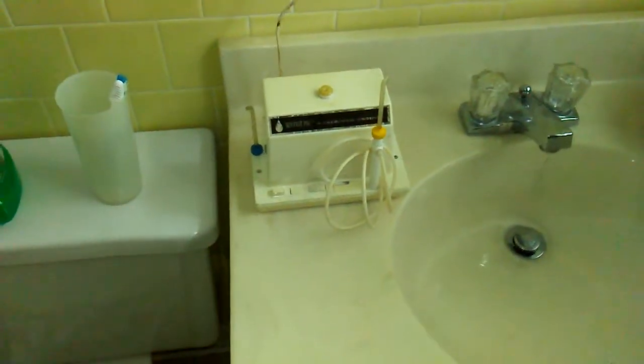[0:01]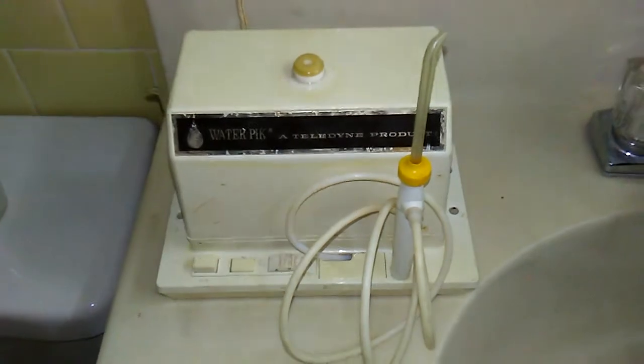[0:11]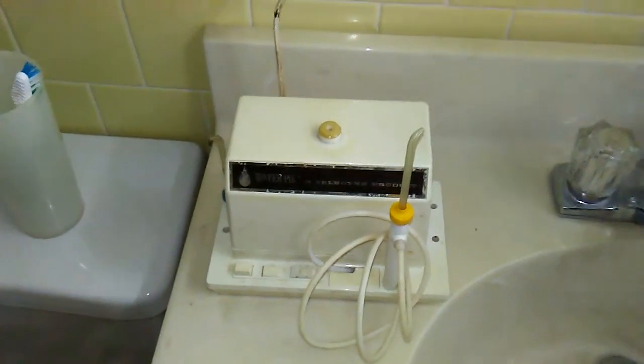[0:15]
Hi there. So a few weeks ago, I started going to a new dentist, and he said I ought to be using a WaterPik. I thought I had one up in the attic, and sure enough, here it is. It's a model 71. I think it's maybe from the 1970s.
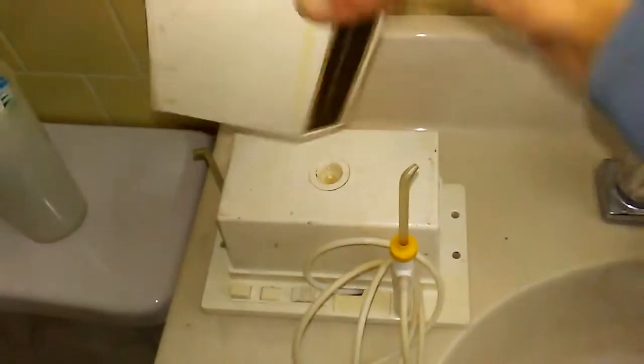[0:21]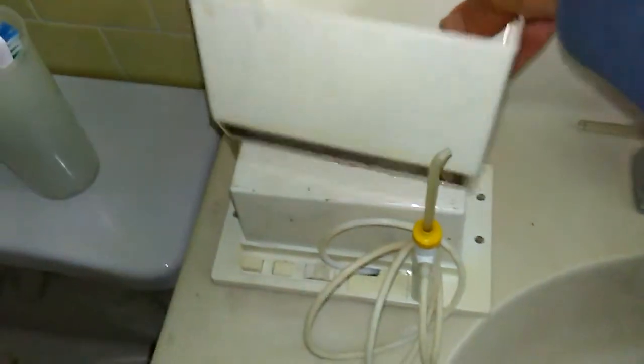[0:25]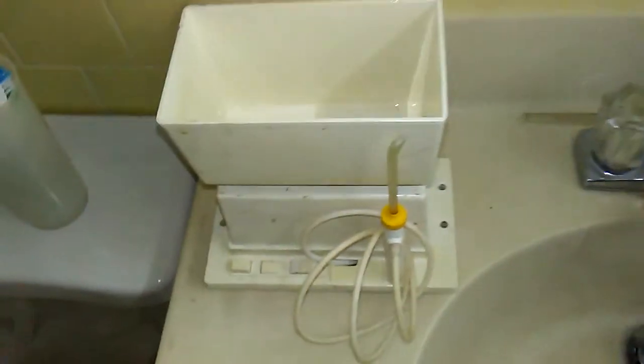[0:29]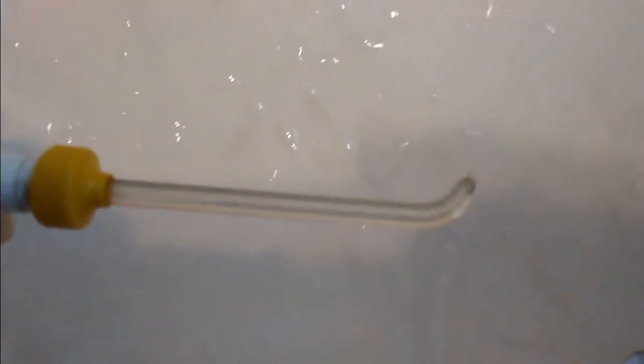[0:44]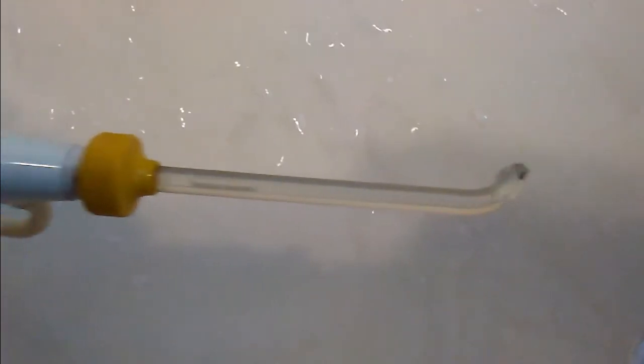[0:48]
This cover here flips over, forms a reservoir for the water. Anyway, it worked great for about a week, and then it started leaking. So if we turn it on here, kind of hard to see on camera, but what it does is it pulsates for a few seconds, and then it starts dribbling for a while, and then it'll pulsate again.
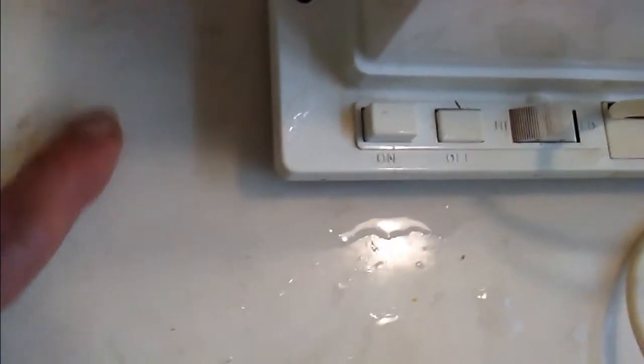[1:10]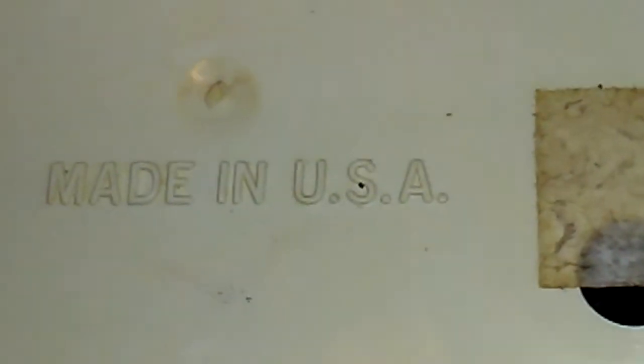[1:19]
And if we look on the unit, you can see that it's leaking. And it's also leaking from the bottom onto the sink, making a nice puddle here and then dripping onto the floor. So let's see what we can do with this thing. Again, it's a model 71. Made in USA. Can you believe it?
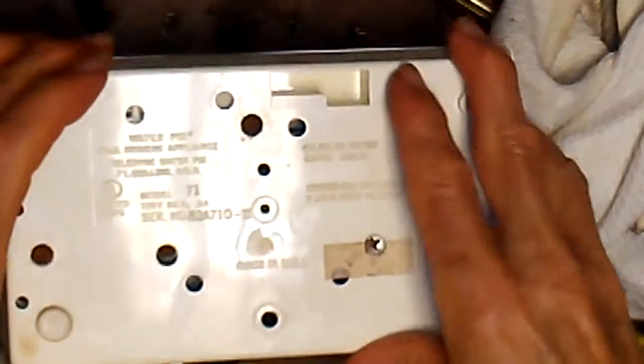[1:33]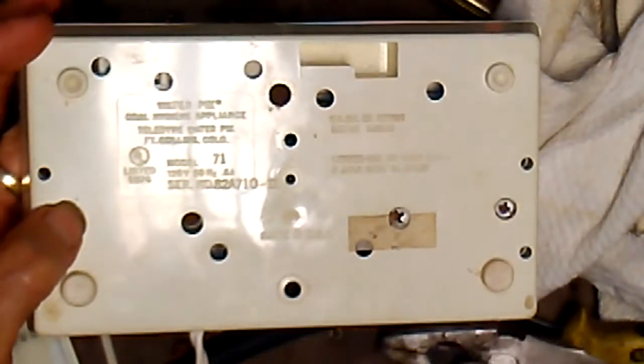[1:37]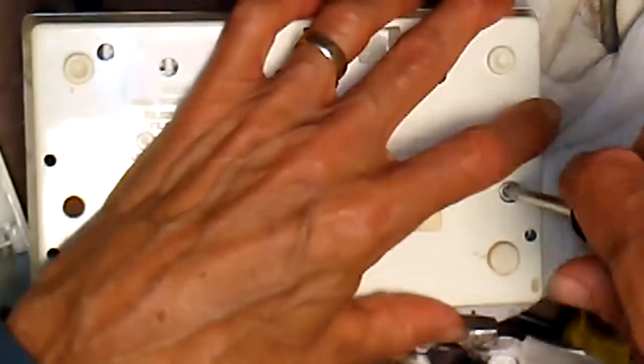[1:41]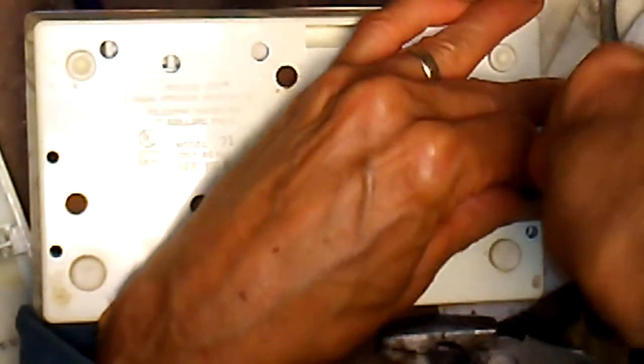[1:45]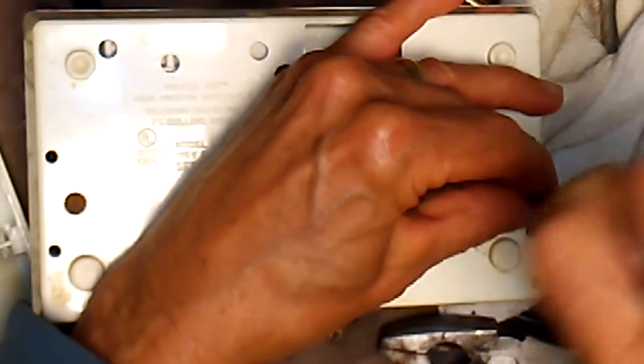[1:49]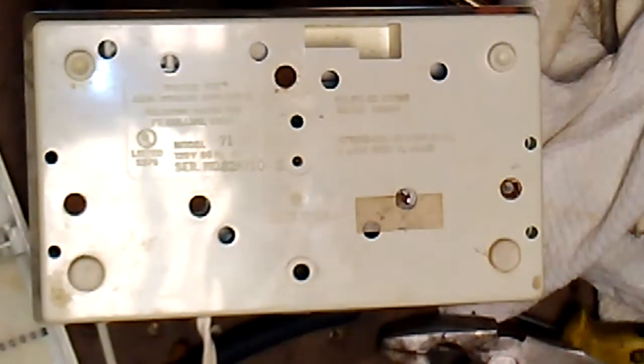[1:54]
Looks like the bottom is held on with 4 or 5 little screws here. These are metal into plastic, so they're going to be stuck in there pretty good, and they're rusty as well. Yeah, that's real tight. There it goes. Okay, I got one out. So I got all the screws out except one here.
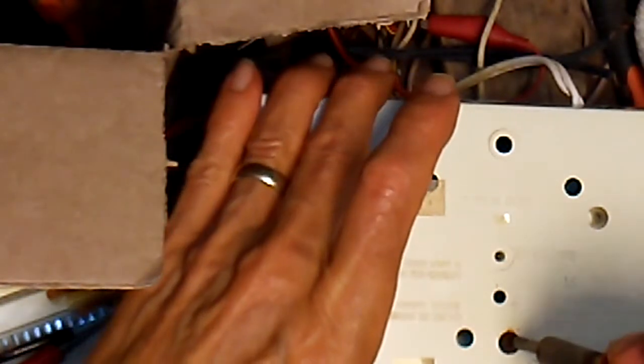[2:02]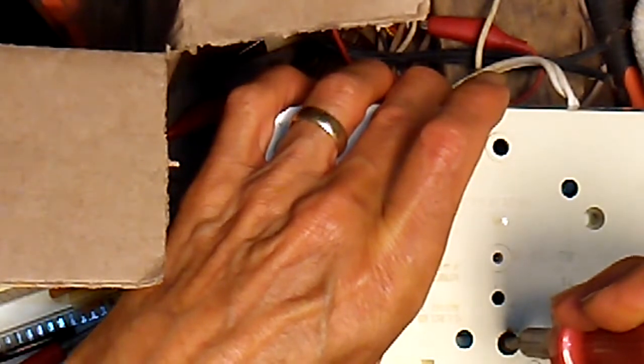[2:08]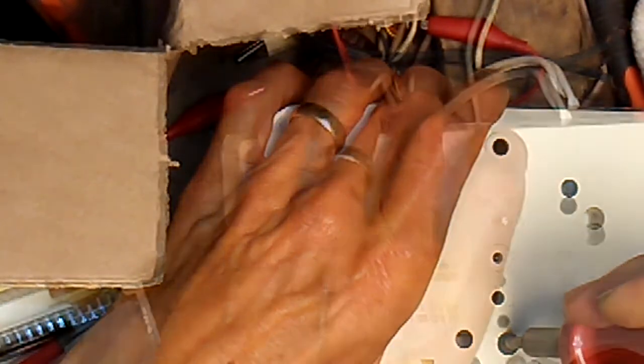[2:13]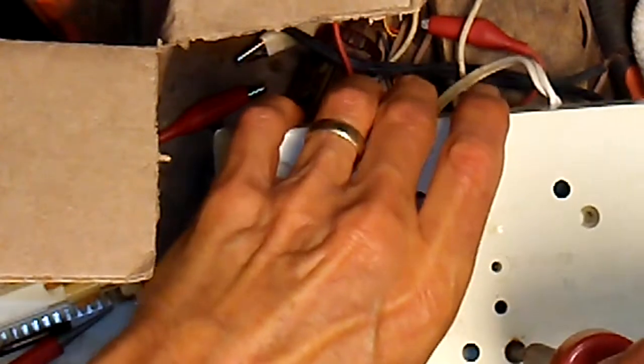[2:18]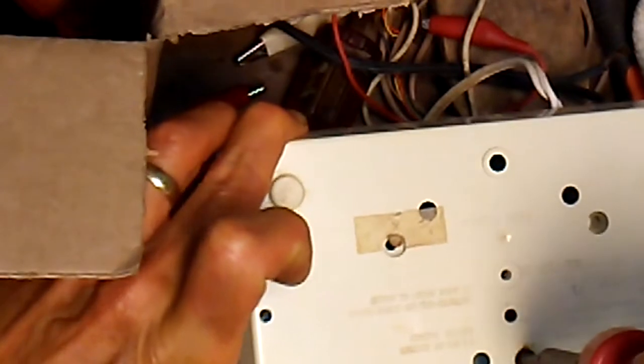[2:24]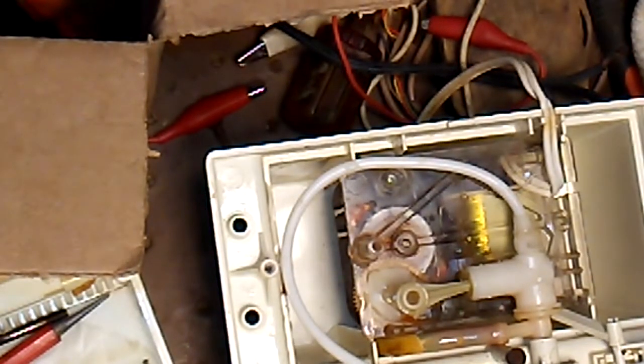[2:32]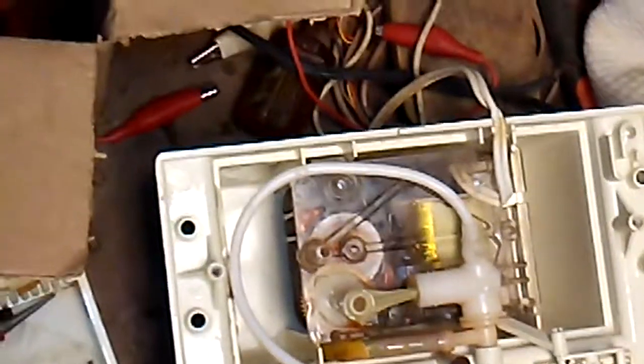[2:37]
It's really rusty. Just can't get a grip, so I'm just going to melt it out with a soldering iron here. Okay, it's coming. There it goes. That's after about 2 minutes of melting. So it looks like there's a motor and a little pump here. And here's the hose from the reservoir.
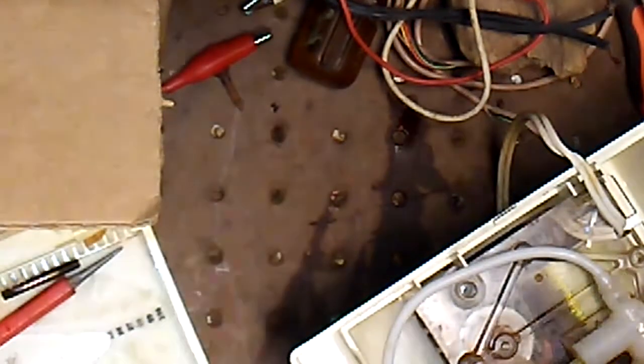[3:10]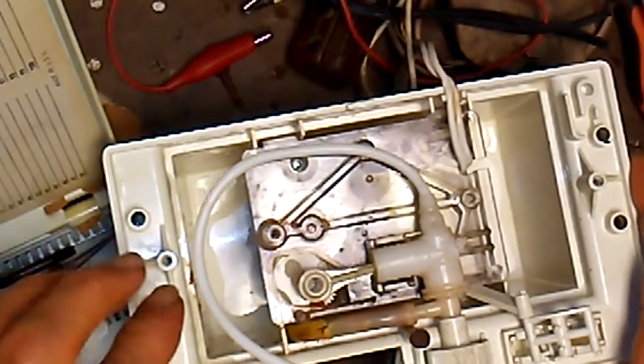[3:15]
It looks in pretty rough shape. Not sure what happened there. Maybe heat from the motor made it degrade. But if you squeeze it, it just comes apart completely. So let's take this out, see what we can do. Looks like the whole unit will just slide out now.
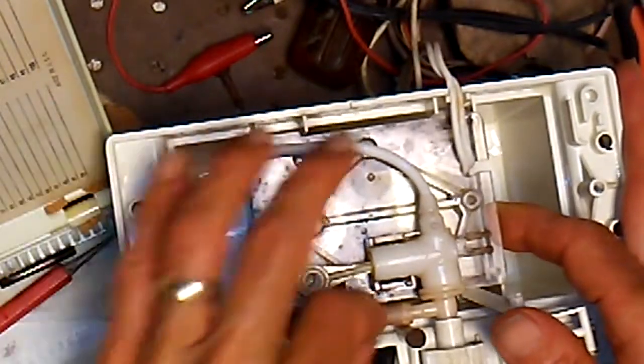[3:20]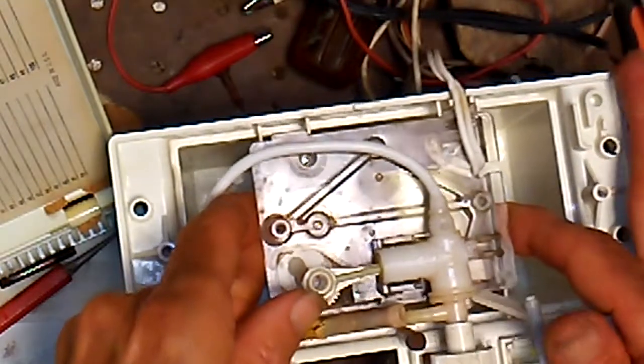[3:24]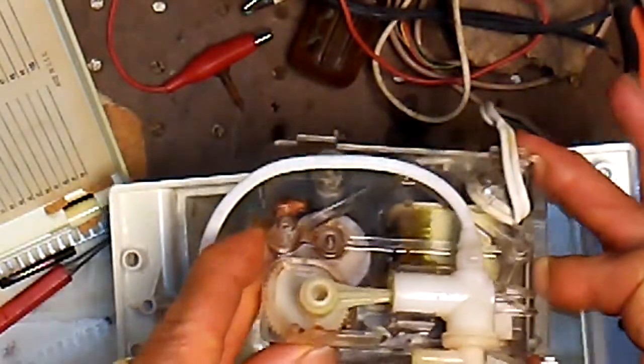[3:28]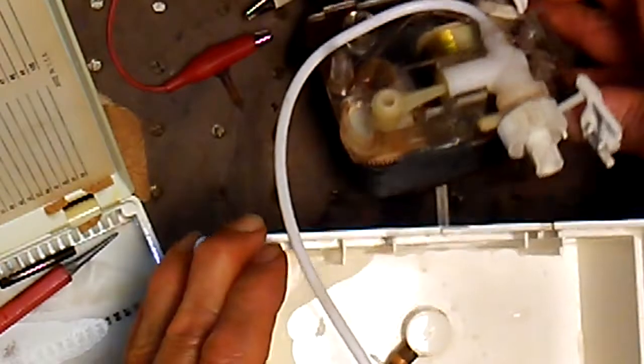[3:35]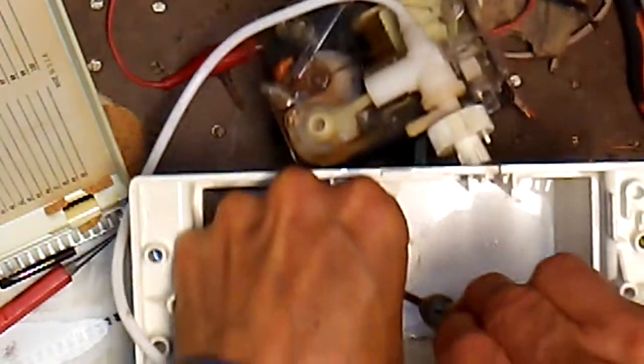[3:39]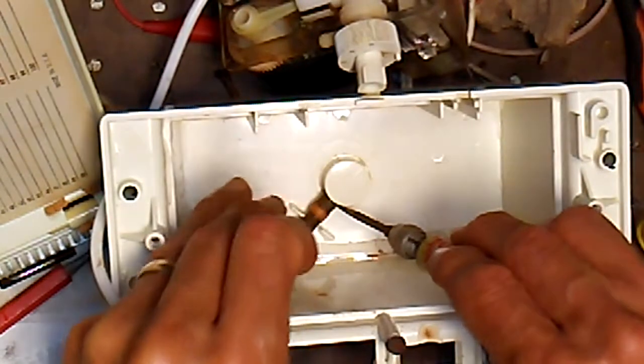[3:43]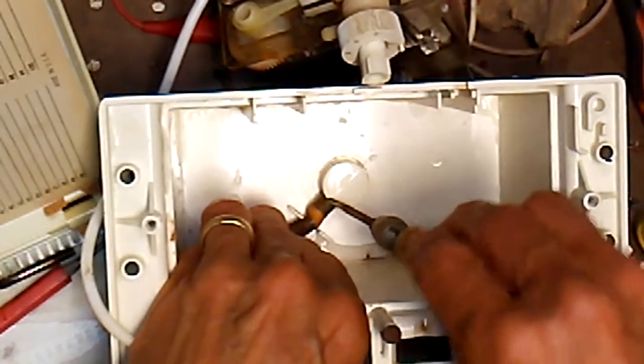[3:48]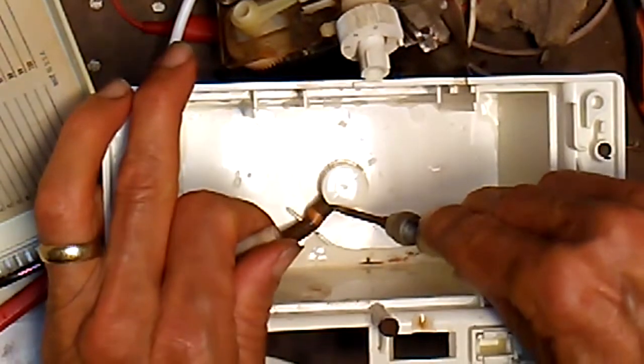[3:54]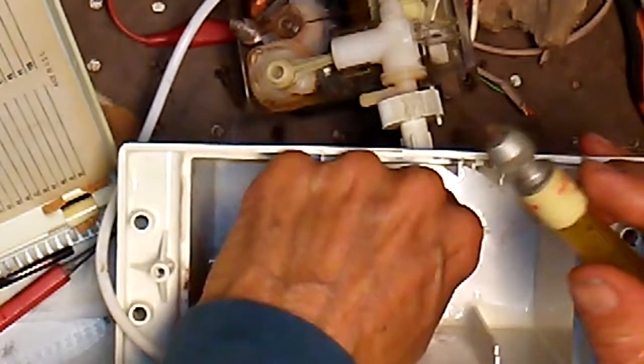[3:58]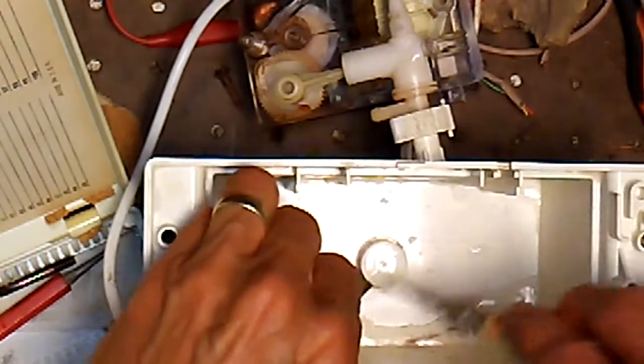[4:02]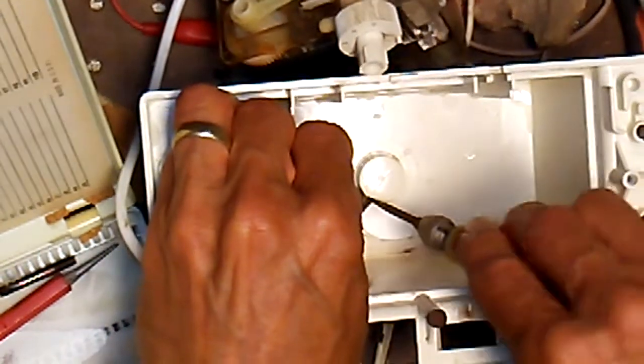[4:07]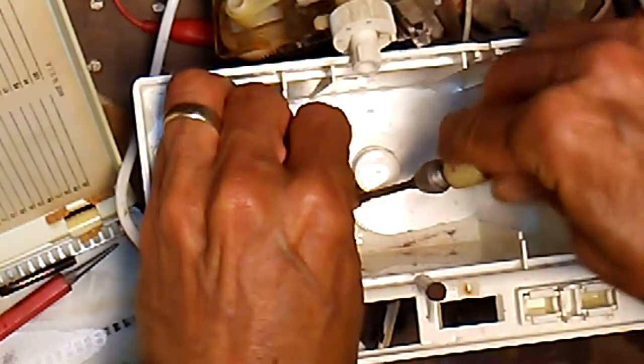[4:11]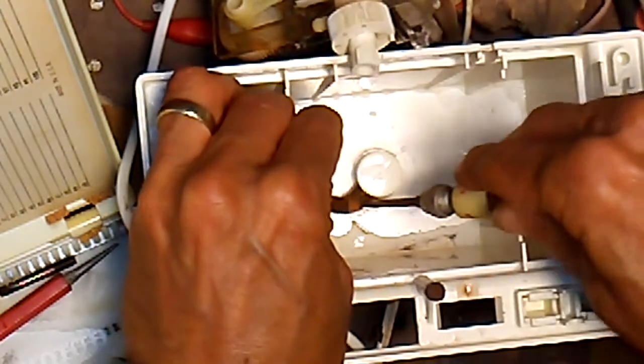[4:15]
Let's take the hose off. Sure enough, this just slips right out. And there's the rest of the hose. It looks in pretty rough condition as well. See if we can get it off the barb here. It's not going to come off easy. Probably have to tear it off. See if we can get the screwdriver underneath here and pry it. And it's not coming off, it's just falling apart.
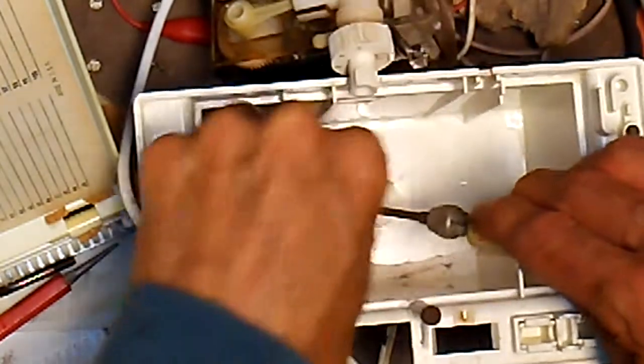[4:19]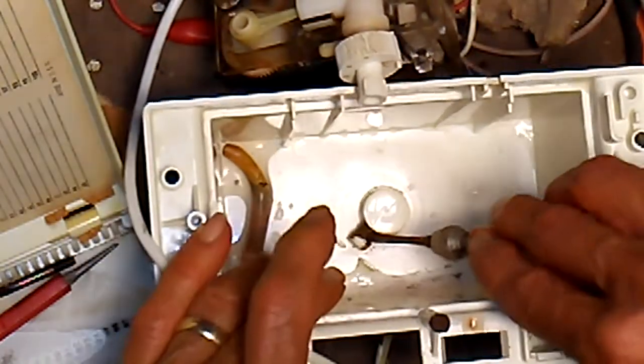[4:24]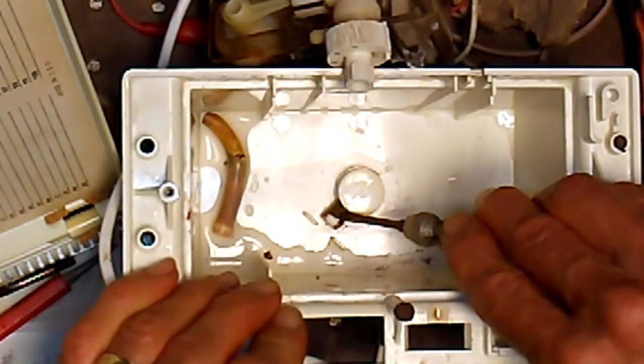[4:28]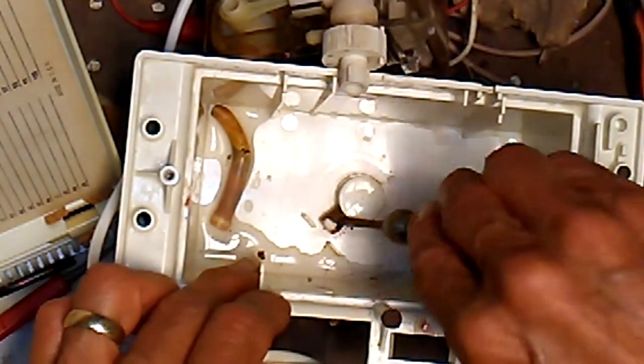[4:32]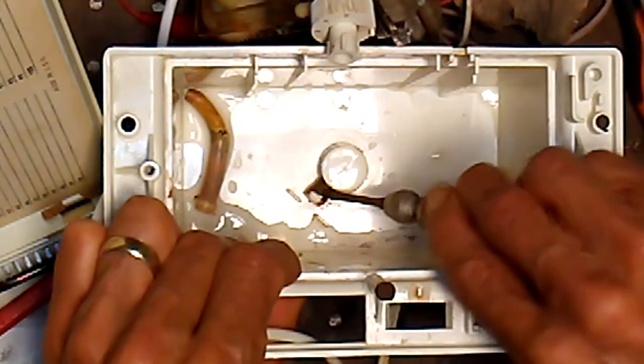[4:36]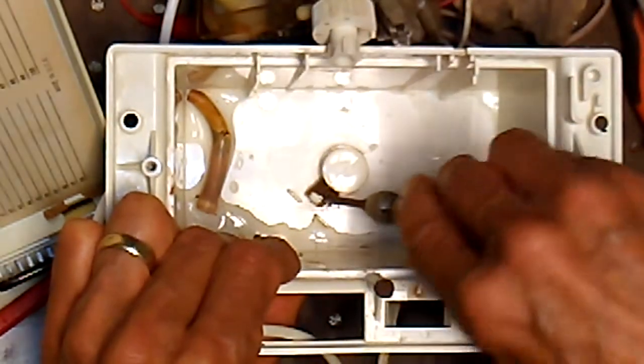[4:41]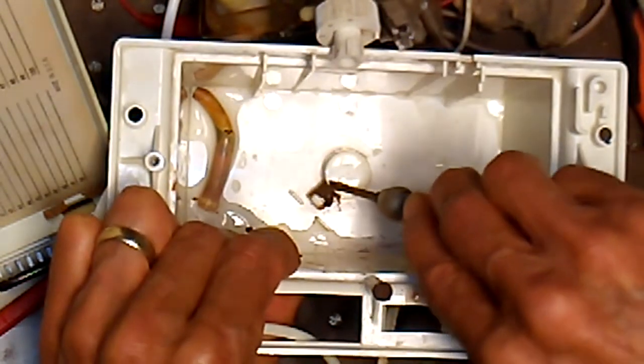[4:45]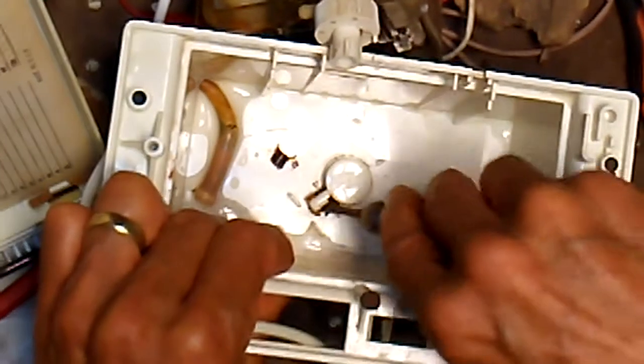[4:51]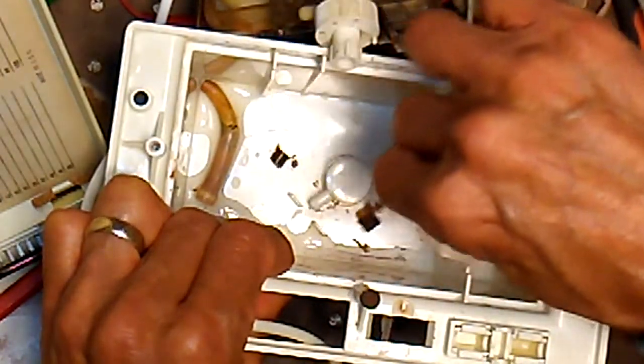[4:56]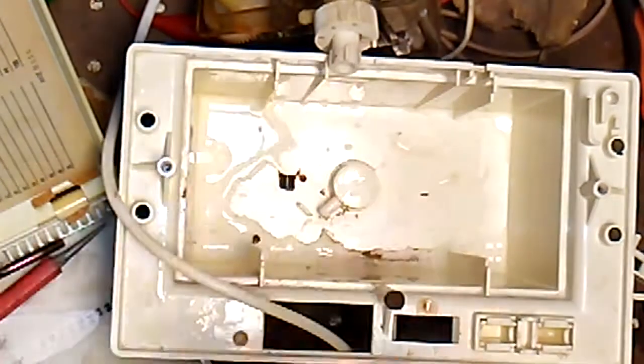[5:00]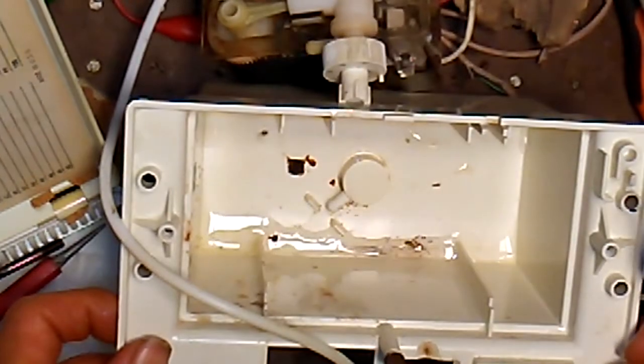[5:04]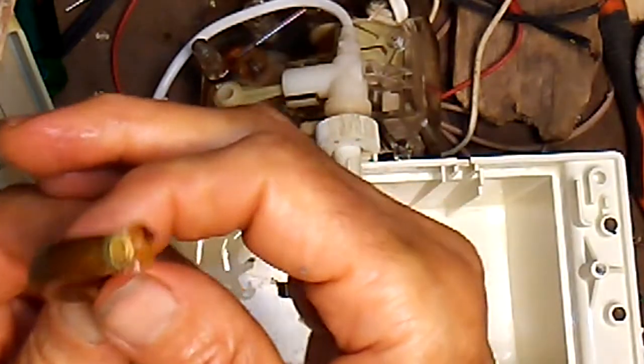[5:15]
Okay, so the hose is torn off. There's still a stub on there. And it looks like we'll just have to break that up. Okay, there it goes. Again, it's just falling apart completely. Looks like the barb is in okay shape. So maybe just have to replace this piece of tubing. So there's the full tubing. You can see it's in terrible shape and just disintegrating all over the place.
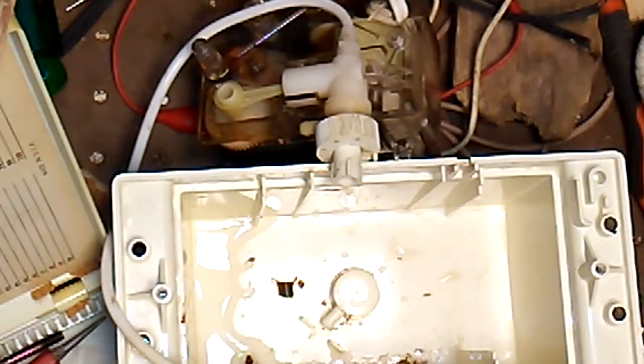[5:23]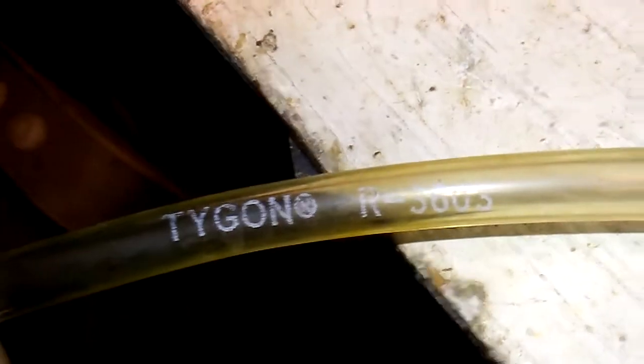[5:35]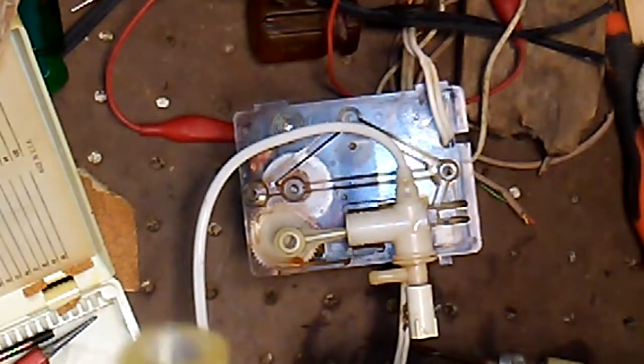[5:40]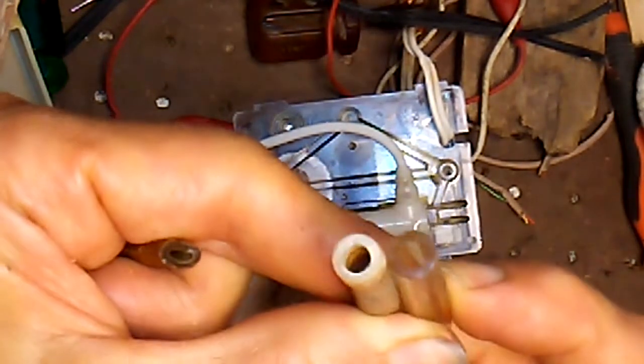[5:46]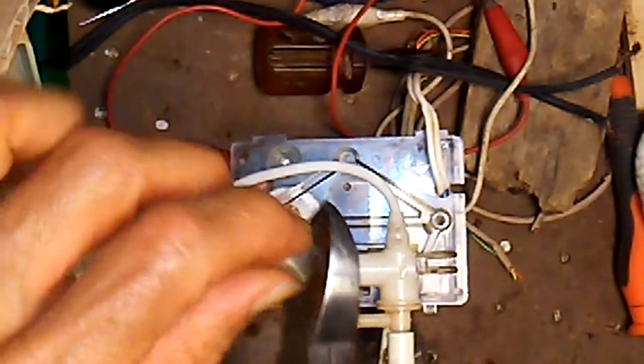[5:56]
Let's see if we can find something similar. Happen to have some of this Tygon tubing. It's Tygon R3603. This is 3/16 inch inside diameter and 1/16 inch wall. We compare that to the old tubing. It's pretty similar, maybe a little bit larger inside diameter, but let's go ahead and try it. Just cut a piece about the same length.
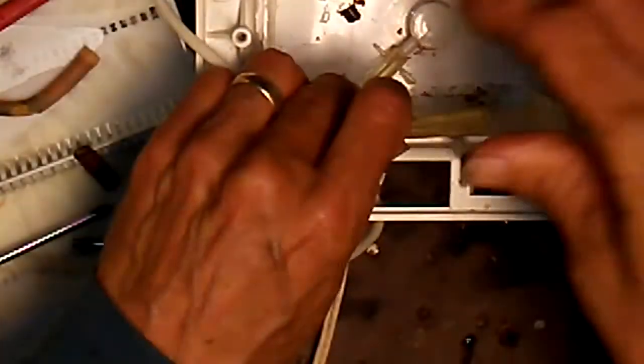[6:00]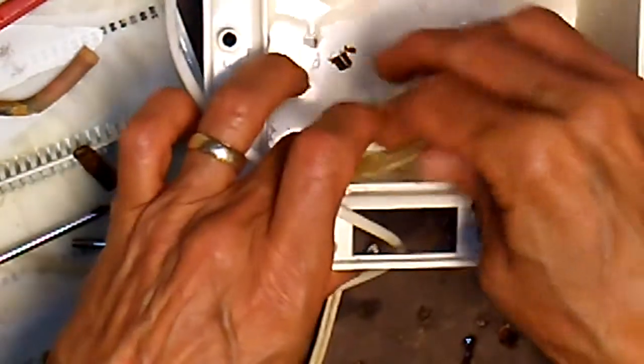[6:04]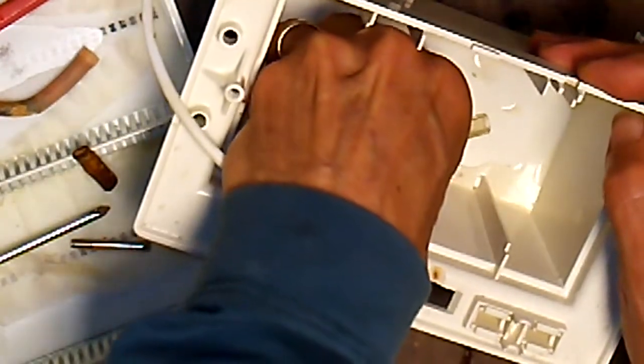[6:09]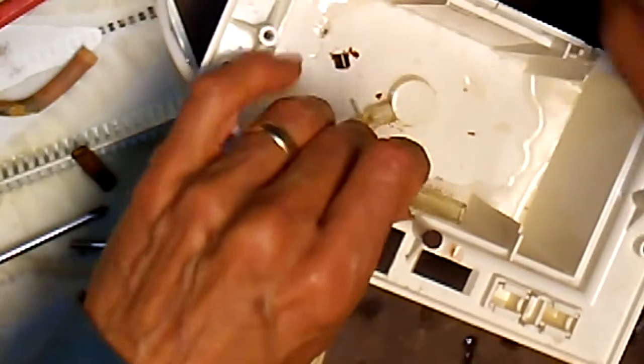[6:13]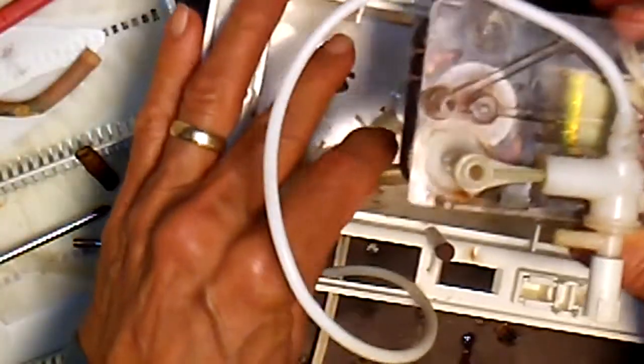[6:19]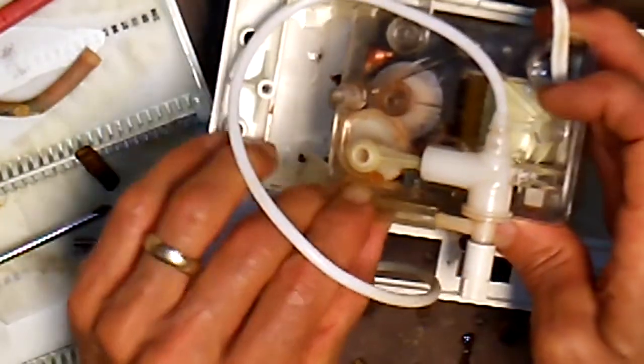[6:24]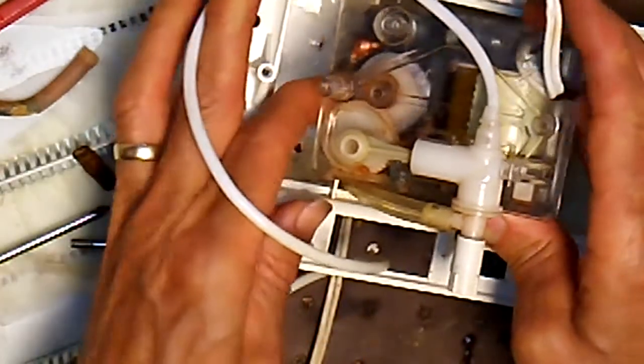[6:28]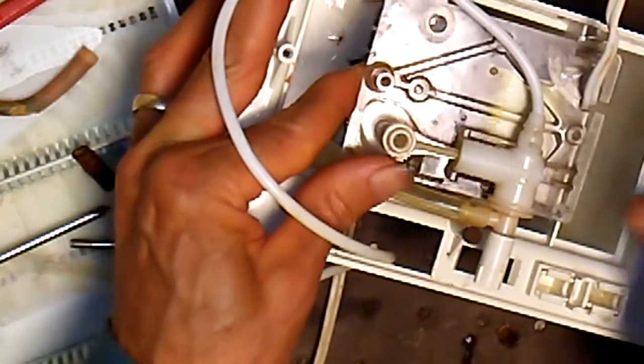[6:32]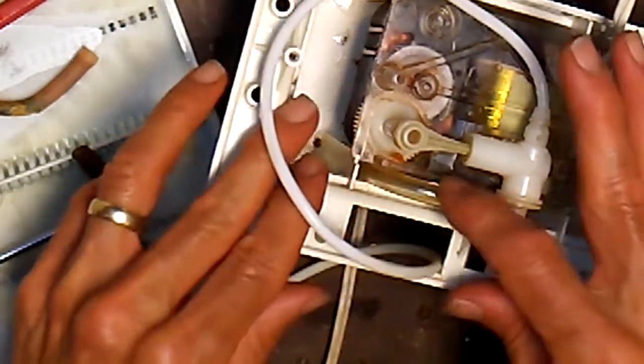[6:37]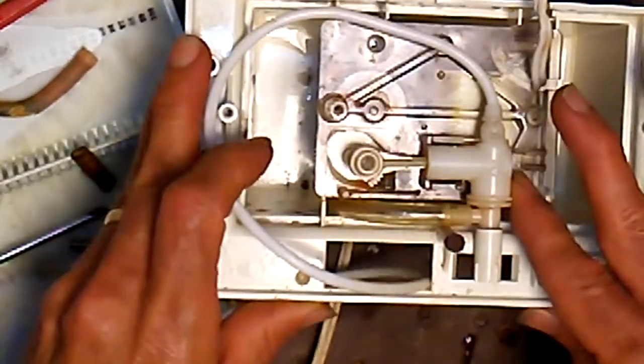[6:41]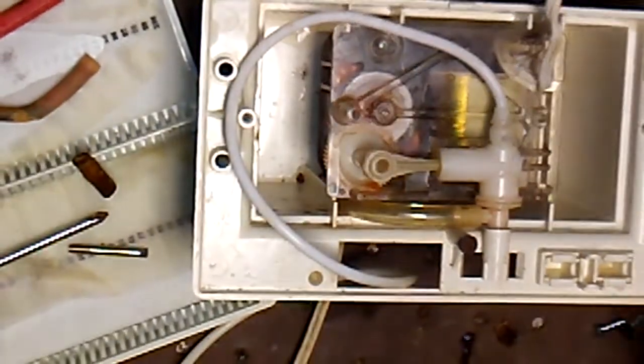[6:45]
See how that fits onto the reservoir here. And it seems to fit pretty good. It's on there pretty snug. Let's try the other end here. And that goes on pretty good. Maybe not as tight as it could be, but there's no real pressure on the hose. It's just gravity feed, so I think it'll be okay. And it looks like the length is just right as well.
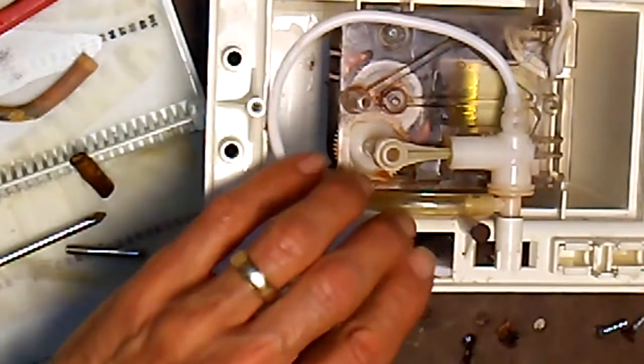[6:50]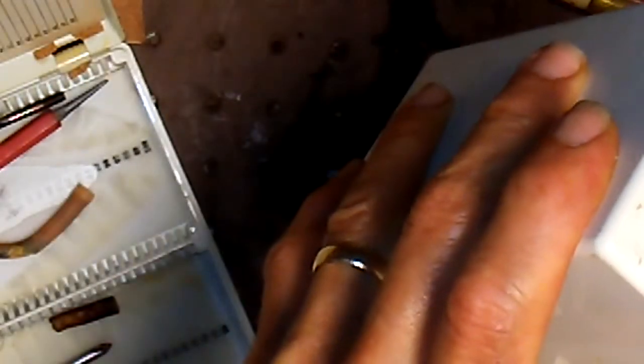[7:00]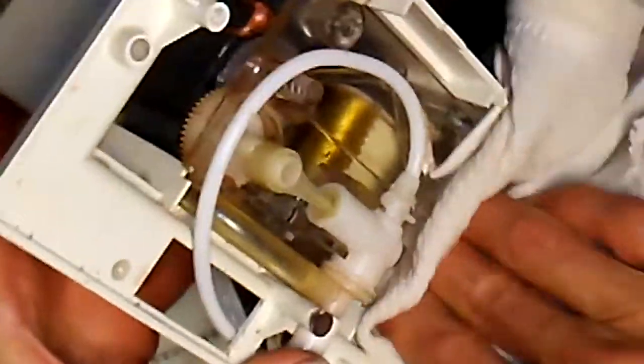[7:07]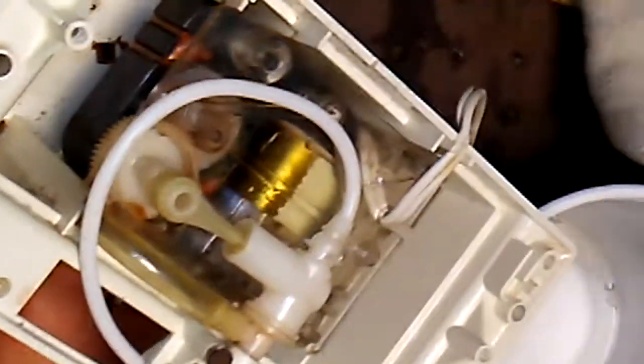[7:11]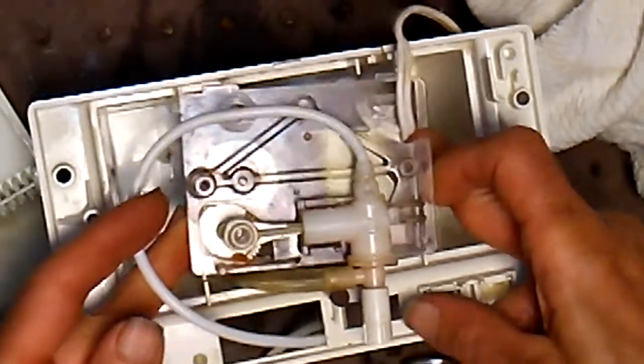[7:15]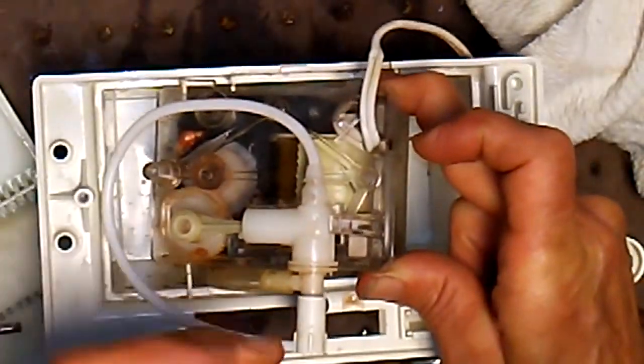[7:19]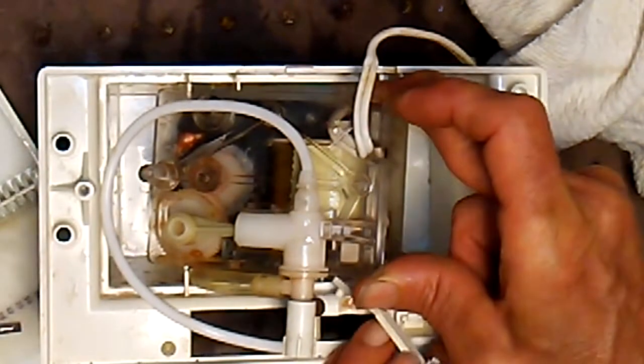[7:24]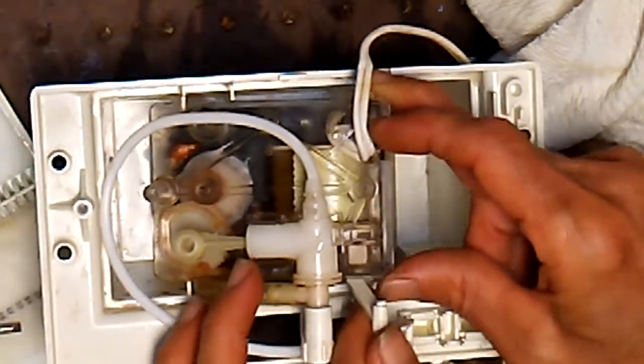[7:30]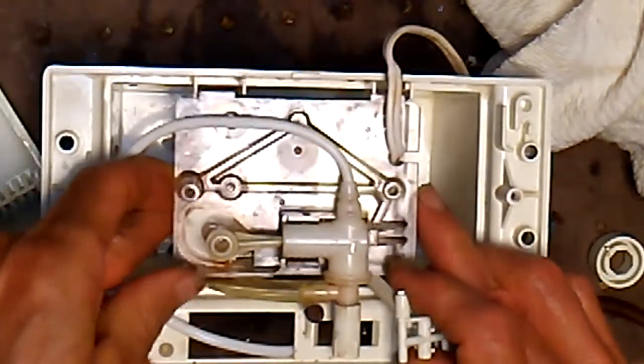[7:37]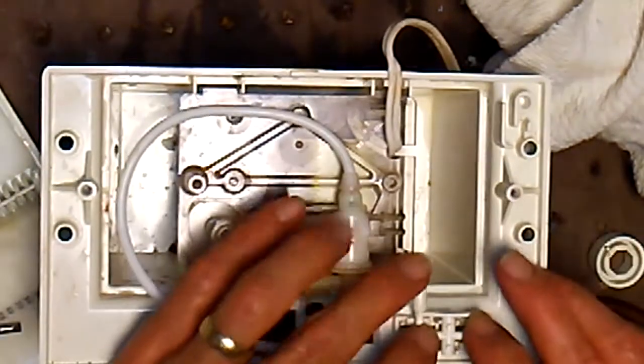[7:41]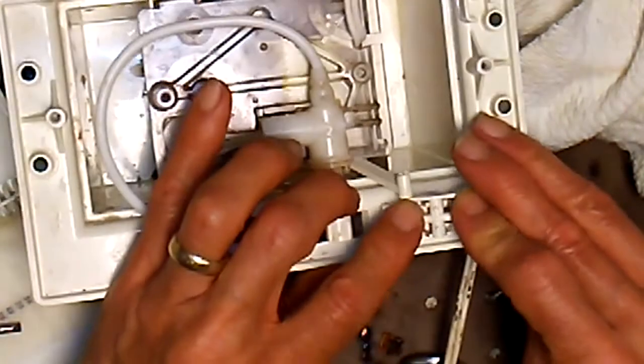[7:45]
There's a bunch of water in there. Let's dry that out. Now I just have to replace this on-off switch linkage. So there's a little square peg there, fits into a slot on the lever. Just slip that right back in. Okay, that seems to be working.
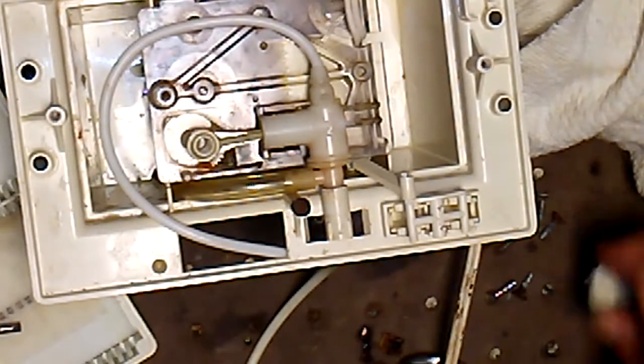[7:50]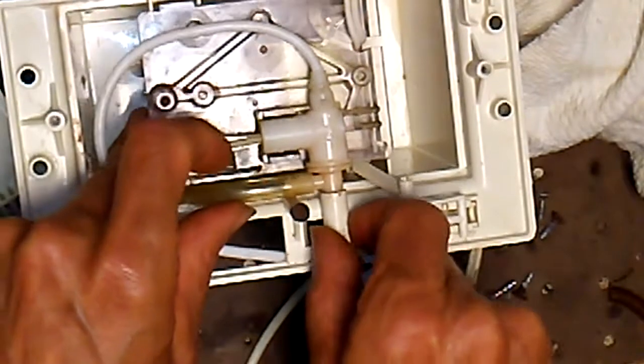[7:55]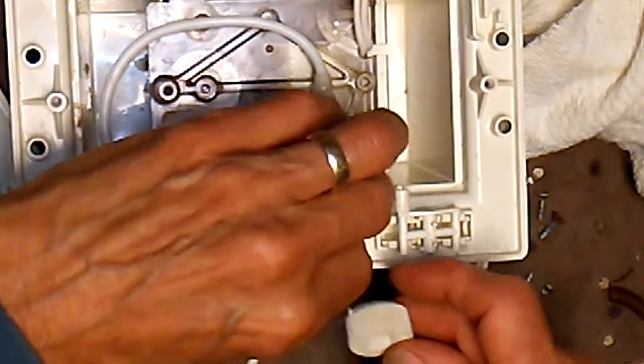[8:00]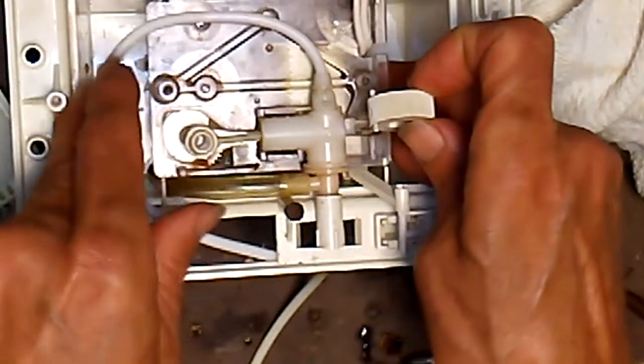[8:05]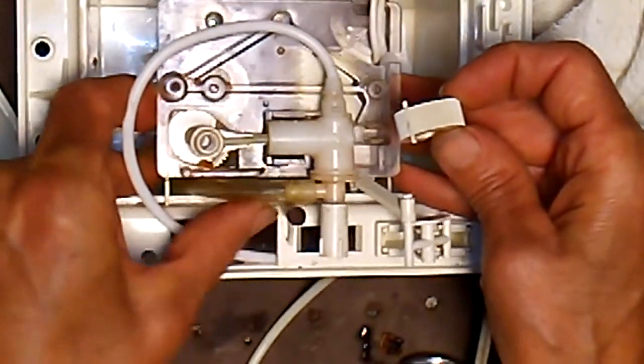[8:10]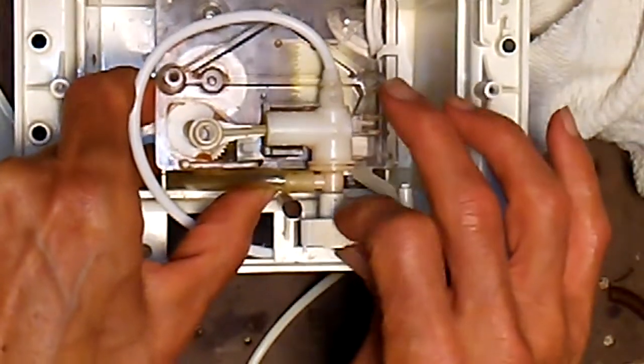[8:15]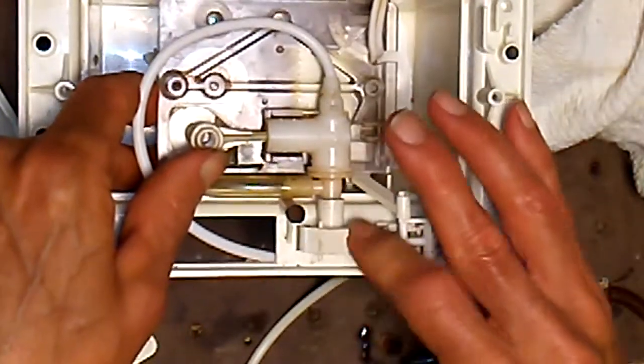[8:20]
Now I just have to replace the control knob. Kind of a square shaft here. And there's a little pin to stop the travel. So that's turned to the far left position, which means it has to fit on here with the pin on the left. And that seems to be working right.
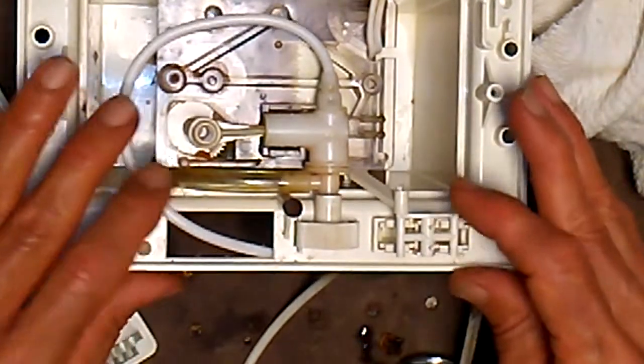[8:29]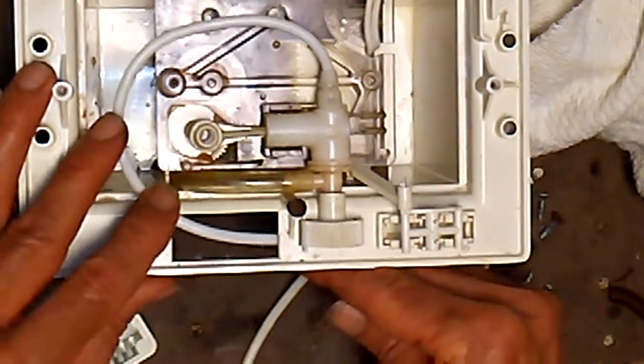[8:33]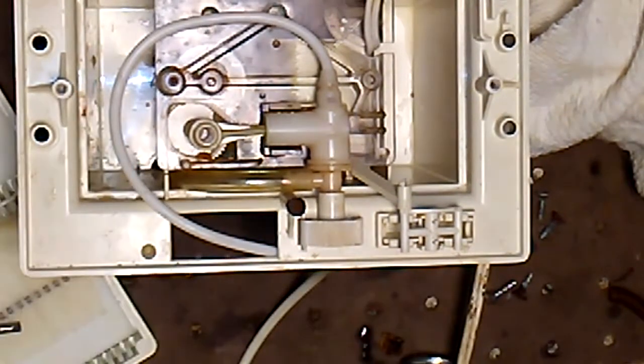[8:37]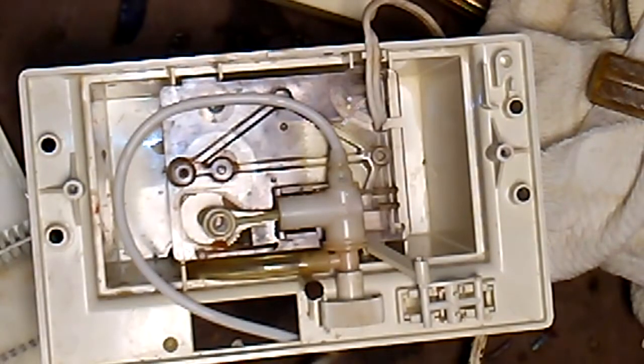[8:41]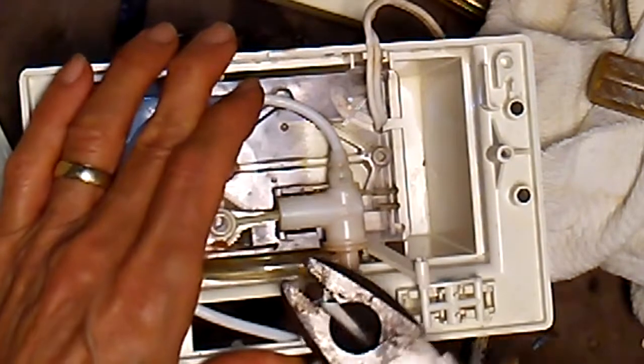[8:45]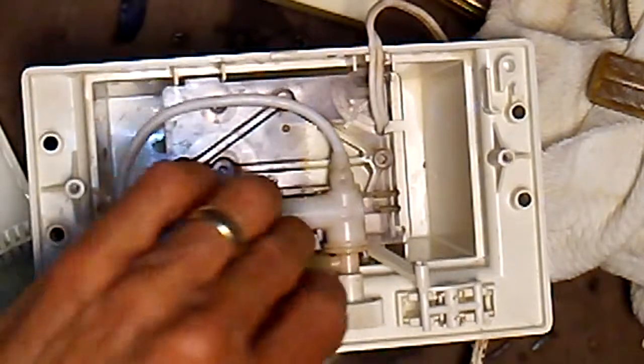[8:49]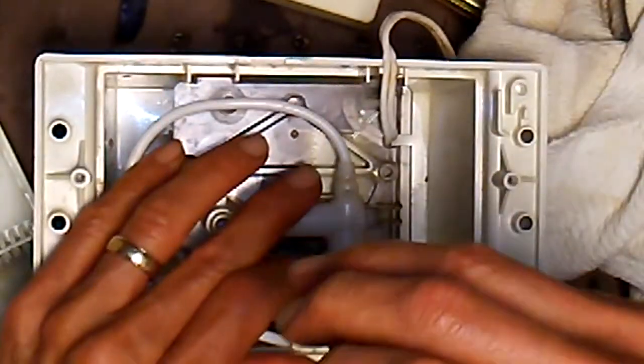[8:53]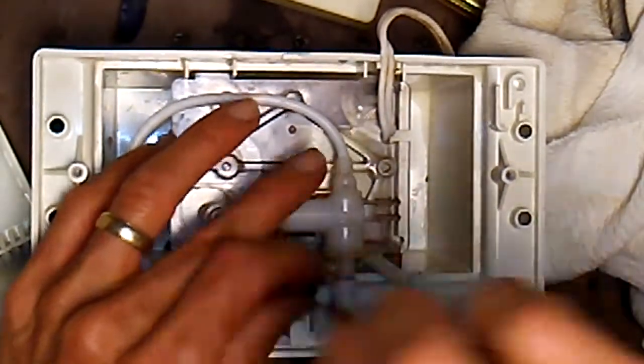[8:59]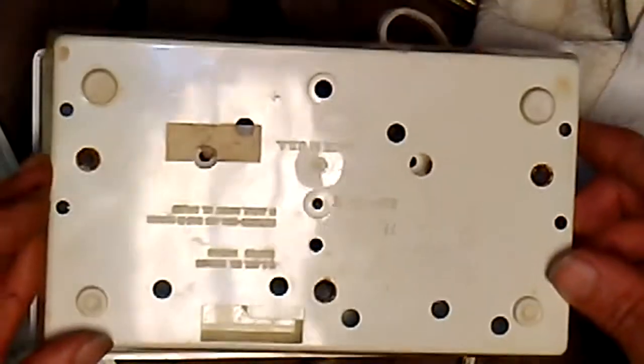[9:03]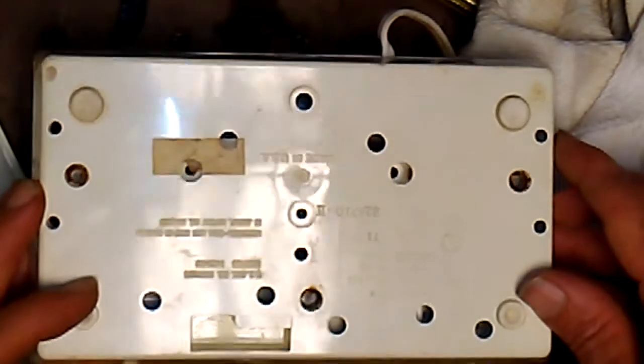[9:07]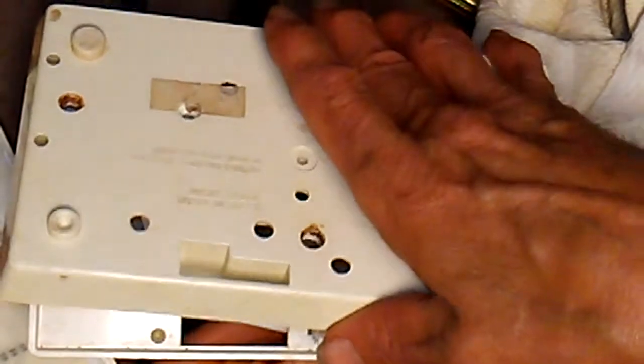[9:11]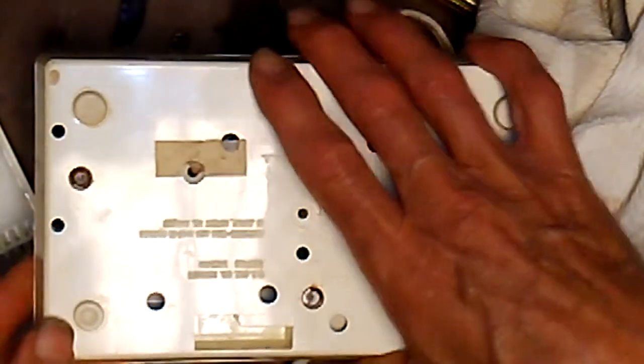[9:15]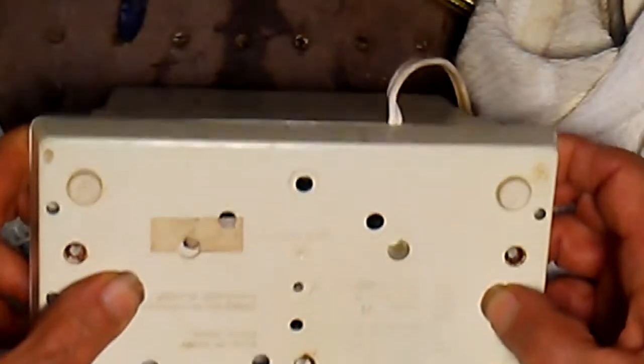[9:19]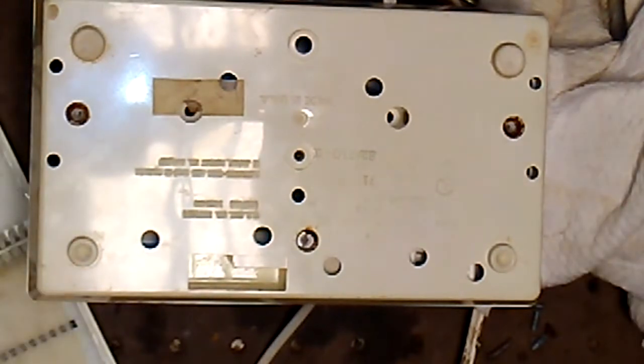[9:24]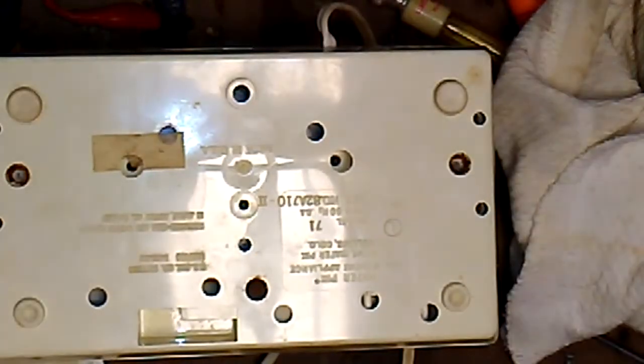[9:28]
Now before we put the top on, we're going to have to remove this rusty screw. Now that we can get our grip on it, it seems to be turning. Okay, so that's out. See if we can slip the lid back on. Get the hose in the right place here. Okay, that's on. Now I just have to replace the screws.
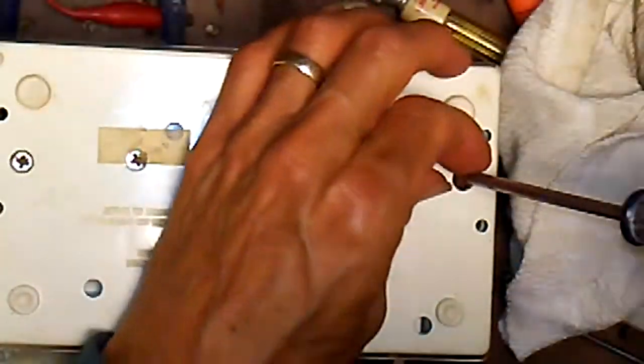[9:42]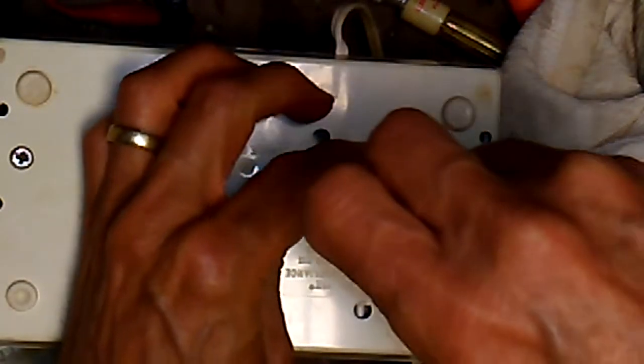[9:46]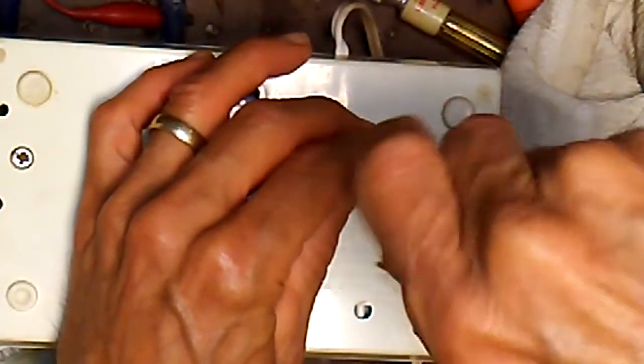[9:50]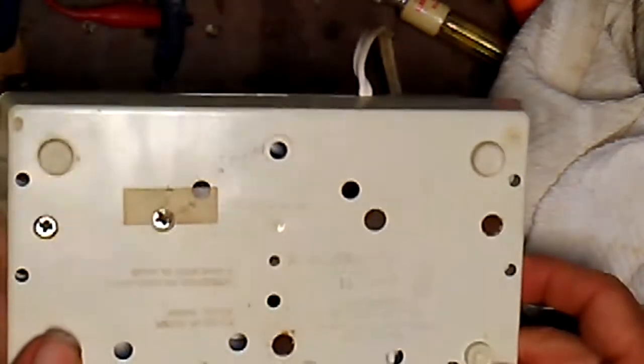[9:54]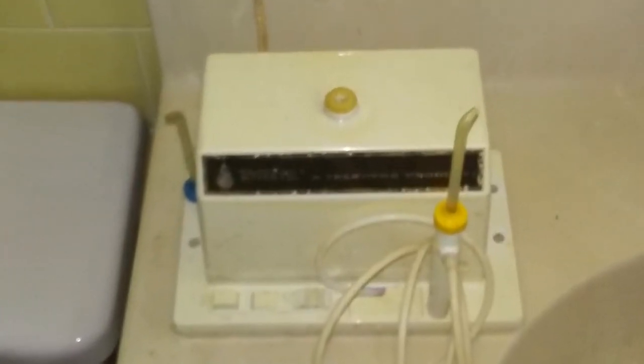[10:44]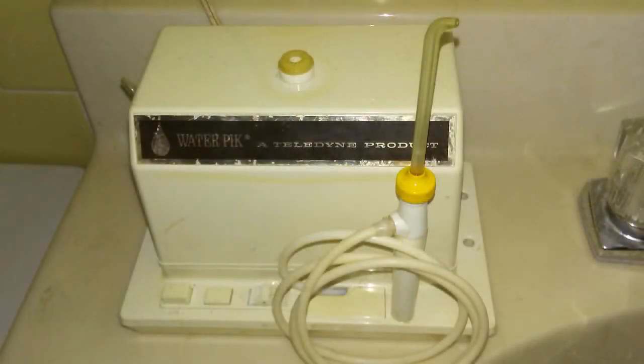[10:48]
Okay, let's go ahead and try it. Let's fill the reservoir. Turn it on. And there we go, nice steady pulsating action. Seems to be working fine. And no apparent leak on the unit. And no puddle on the sink either. So great, looks like it's fixed. So there it is, the Model 71 WaterPik from Teledyne.